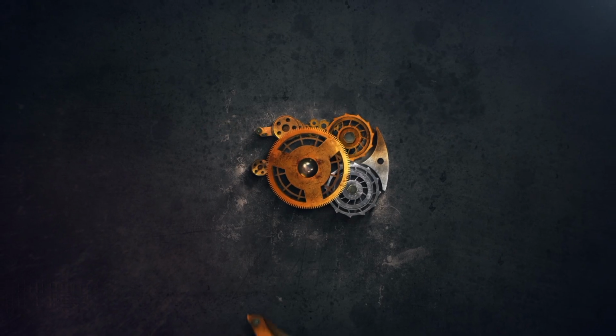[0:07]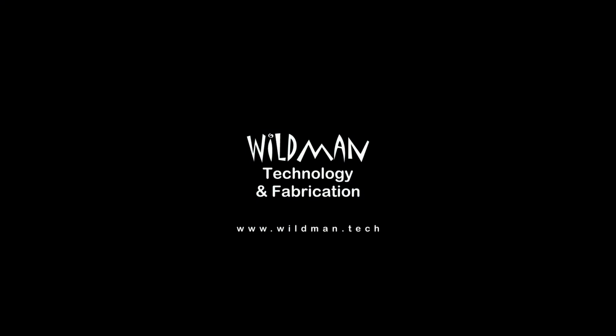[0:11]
Ask your doctor if medical advice from a fabrication shop is right for you.
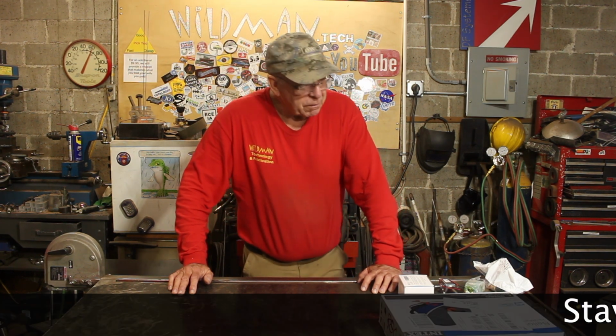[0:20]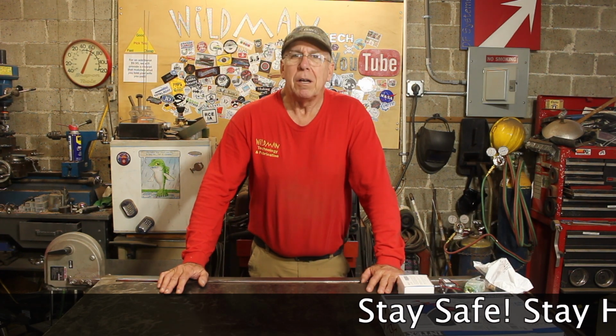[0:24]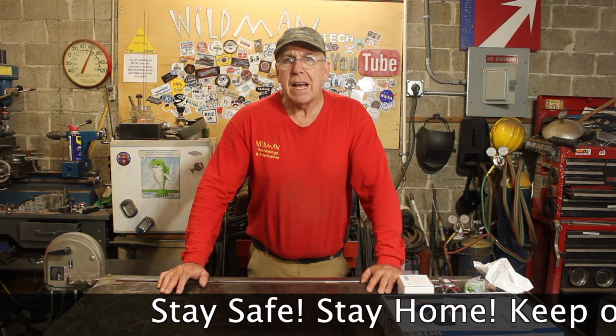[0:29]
Well, friends, every time I turn around, I'm hearing the phrase uncertain times. And why are these times uncertain? It's because of this coronavirus pandemic. So what are the things that make these times uncertain? Among them, it's shortages of things like toilet paper, bottled water, face masks, respirators, and ventilators.
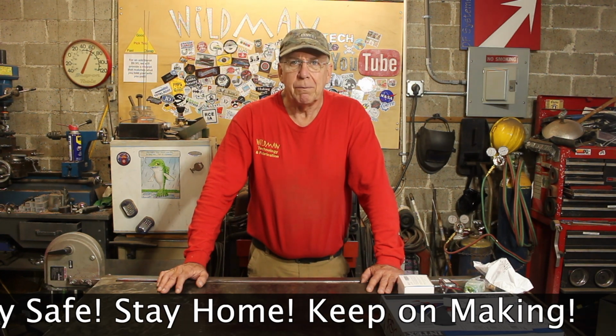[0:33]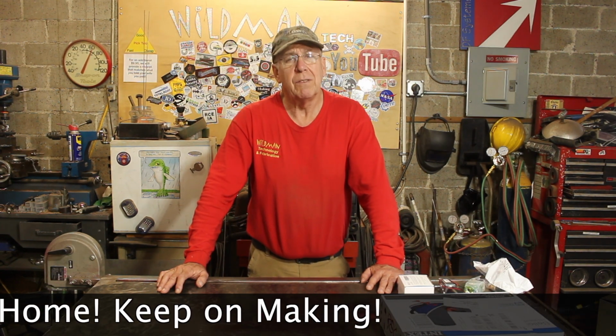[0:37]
Now, I've already made some face masks, and I didn't bother to do a video on it because there are lots of videos on making face masks, and it's really simple. The easiest face mask is just a bandana folded four times with two rubber bands on it and then folded inward on itself. It's incredibly simple. I feel a more worthy task for the channel is to build a ventilator, so that's what we're doing today.
Now, before you guys go getting on me about no FDA approval and a bunch of other stuff like that, 3 weeks ago, cloth masks were strictly out. Now they're not. When times get tough, FDA approval goes out the door. If this thing works, it's going to be an easy project that anyone can make. You'll have this video as reference on how to make it, and on top of all of this, I personally am an at-risk person. I have COPD, and if I need a ventilator, I'm going to have one. And if it doesn't have FDA approval, I just don't give a damn as long as it works.
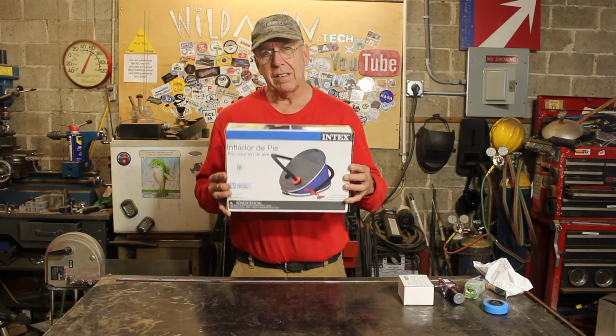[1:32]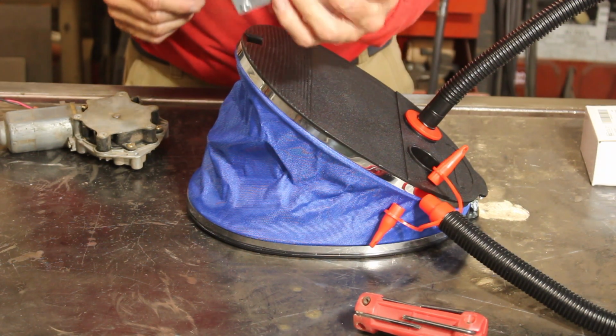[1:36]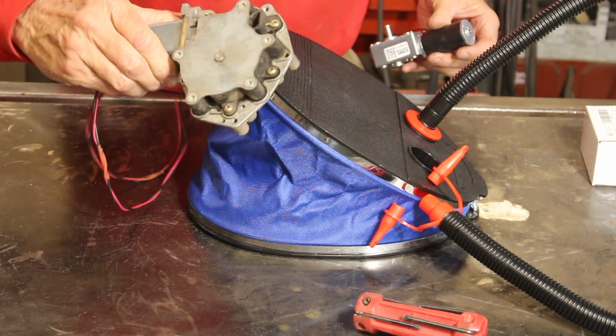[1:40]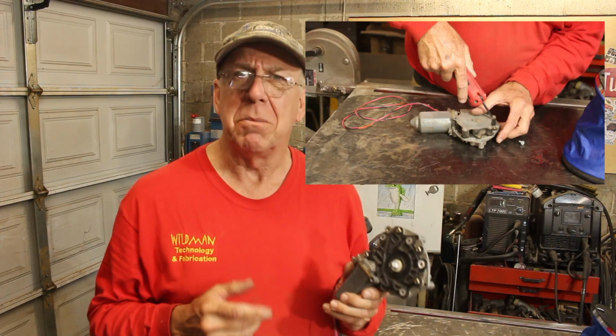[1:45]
We're going to start with an Intex bellows pump. Okay, that'll deliver the volume, but I don't think this little motor's going to drive it. But I have this old windshield wiper motor. Let's see if we can make that work. So this is kind of funny. I just did a whole bunch of mods to this motor, and I'll show you up here in the PIP.
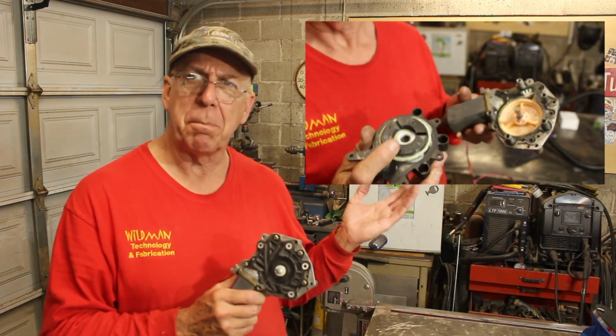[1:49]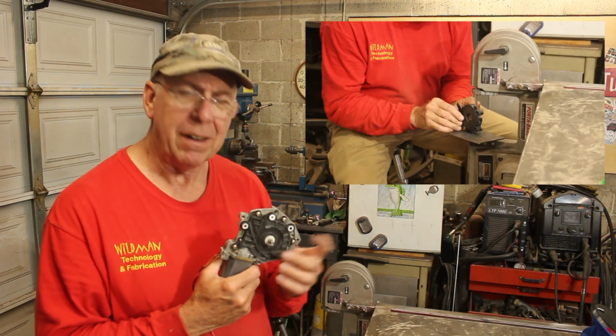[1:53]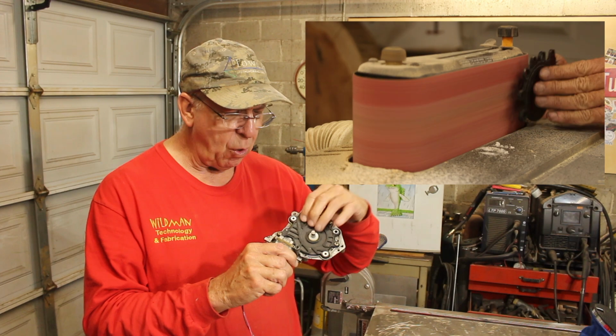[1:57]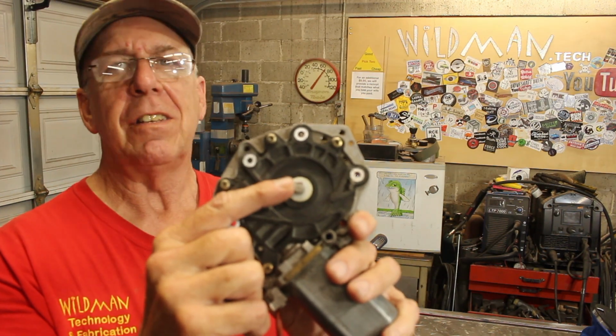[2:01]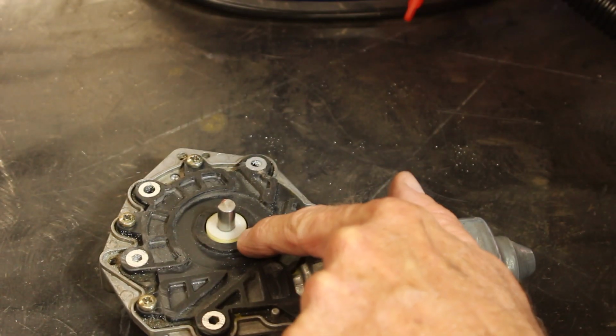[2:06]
To start with, I took it apart. Then I identified the drive interface from the worm gear. Then I shaved off all the excess material from this black plate that holds all the guts inside. Then I shaved a flat onto this spindle, only to discover that it is stationary. The part I cut off is the part that turns. Now I really need a gearhead motor, because this thing takes a lot of force. Plus, I need the low speed. A person only breathes between 12 and 16 breaths a minute, so that's the maximum number of compressions this thing can have.
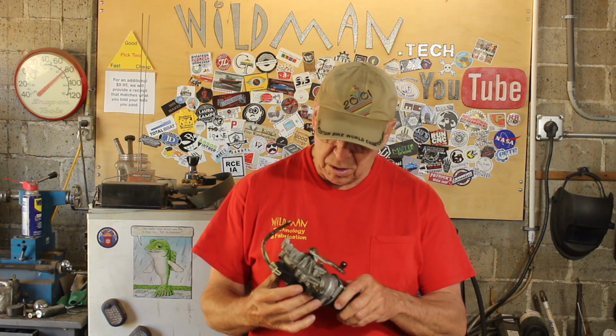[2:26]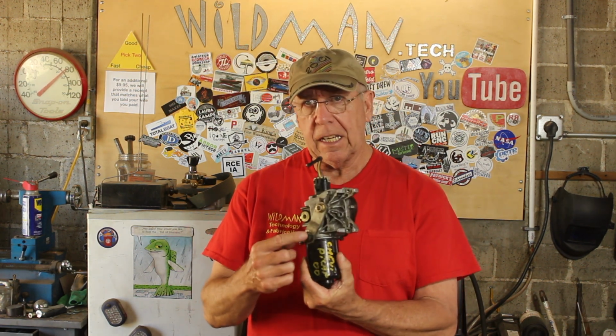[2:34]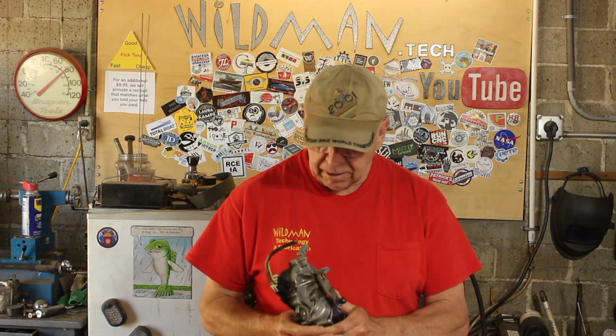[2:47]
Alright, it's the next day, and I've got construction crew next door, so they might generate some noise for us. I got a windshield wiper motor out of a Chevy Silverado 1500. I got lucky, it had the crank arm on it and some of the wiring, because this plug is really specialized. This one has an electronic pulse module inside the motor controller here, and I think that's going to really come in handy. Because of the pulse module, I'll be able to use a potentiometer to vary the sweep rate. Since the mechanics of all of it is going to be easier, I think we'll start with that.
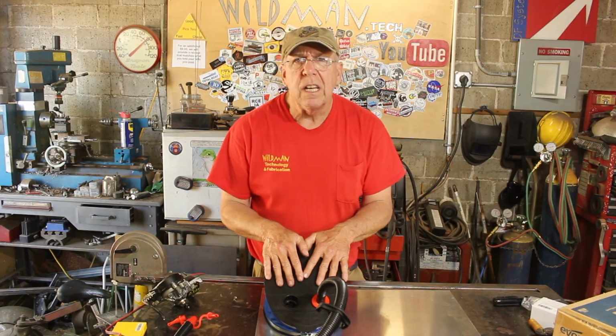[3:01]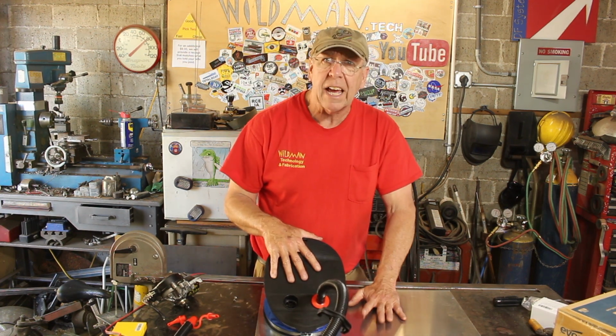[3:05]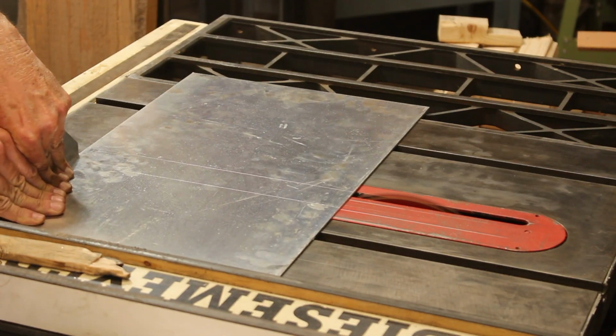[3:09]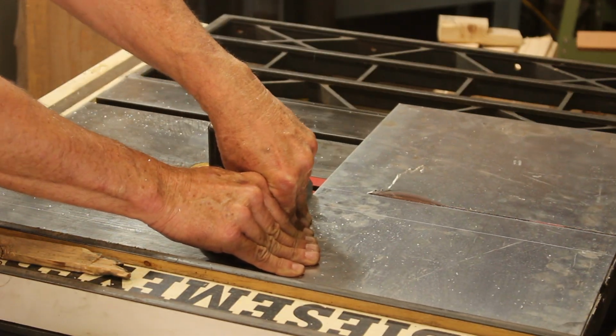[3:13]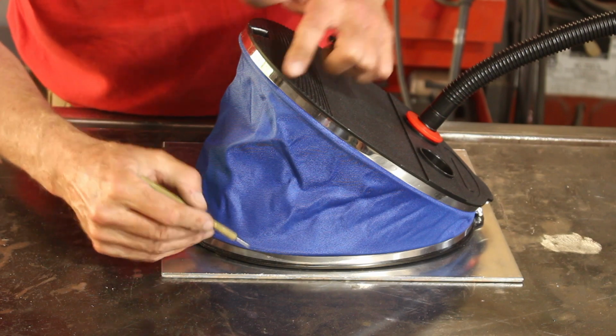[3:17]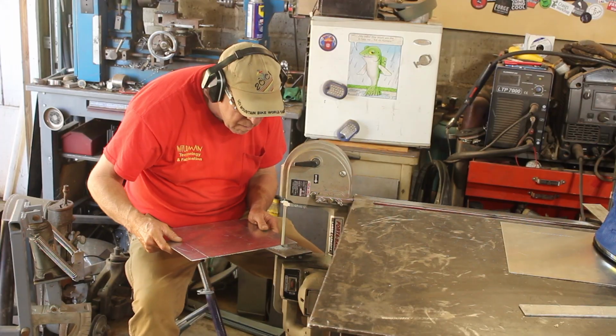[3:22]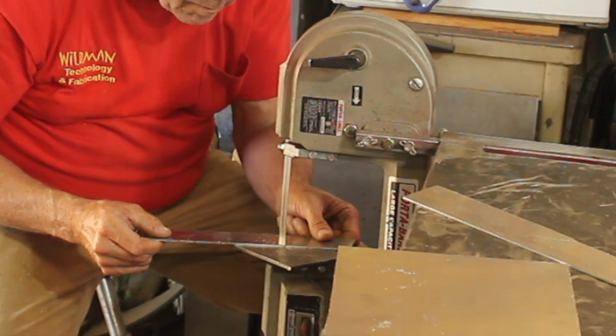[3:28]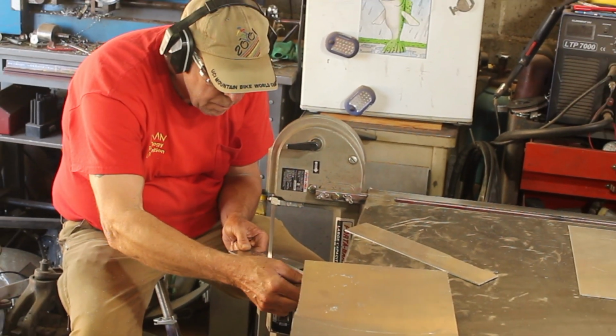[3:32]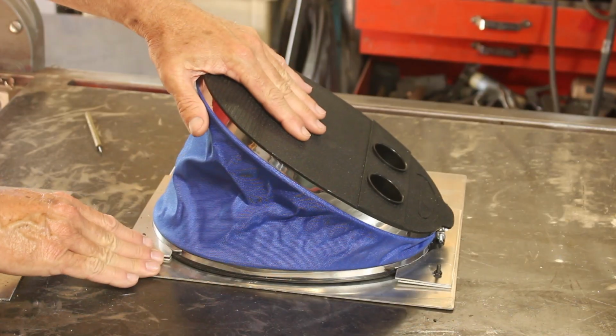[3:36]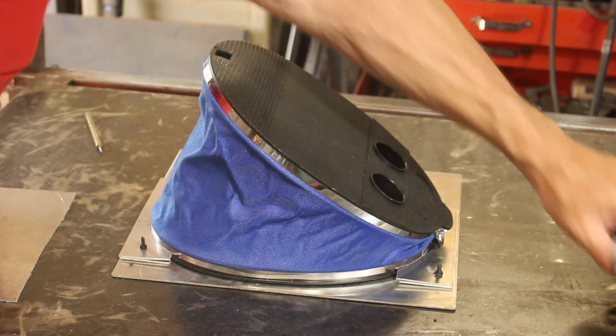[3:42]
Now the first thing we're going to need is a way to hold our pump in place, and this piece of aluminum should do nicely for that, but it's way bigger than it needs to be. A lot of people don't realize this, but most woodworking tools work just fine on aluminum as well. Okay, so I'm going to take the drop from that cut and make clamps. Okay, now we have our pump mounted to our base plate. Now we need to create a motor mount for our windshield wiper motor.
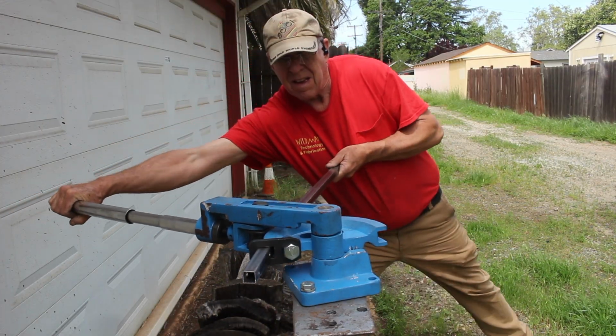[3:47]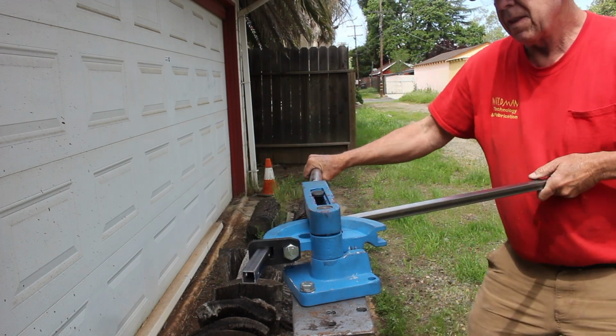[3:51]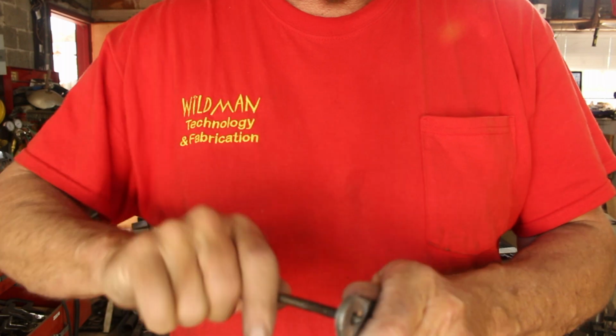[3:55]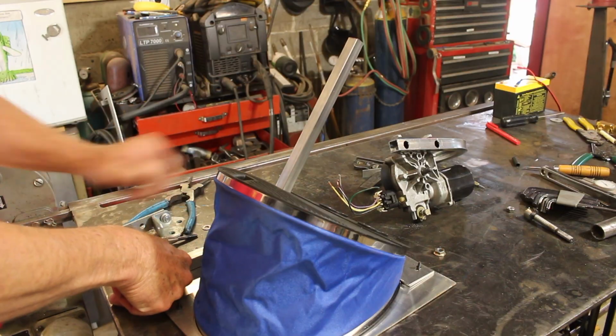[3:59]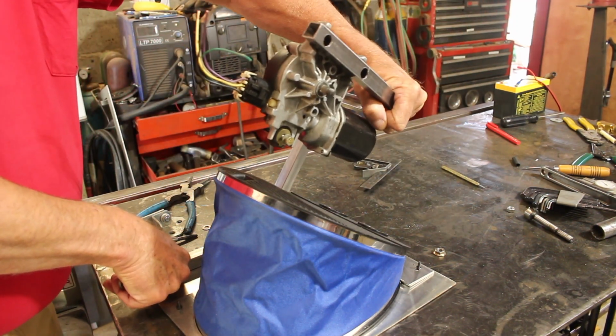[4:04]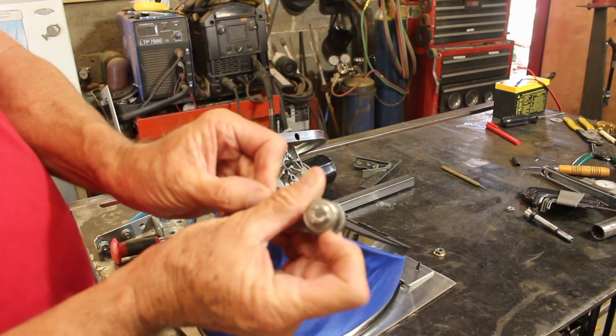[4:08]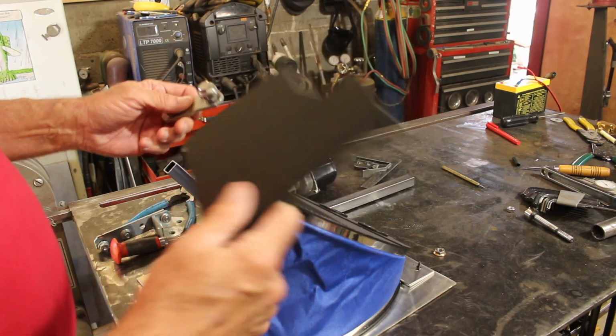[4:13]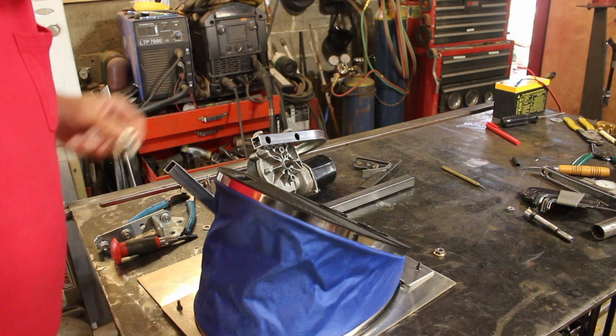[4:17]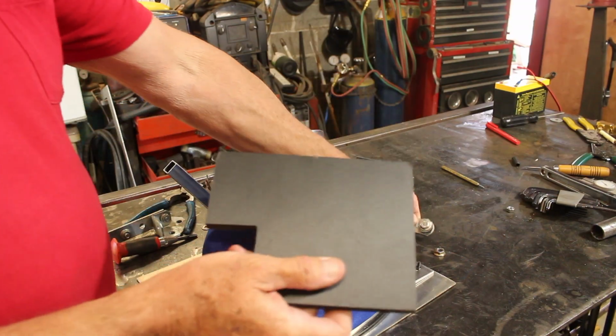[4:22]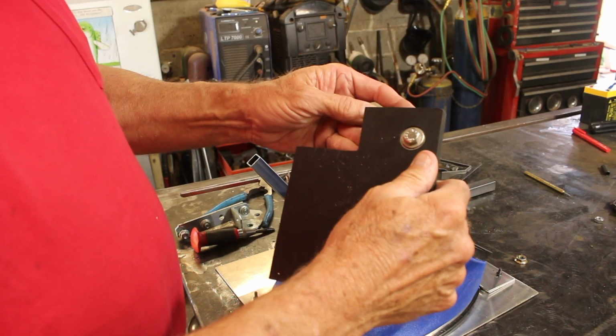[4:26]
And here I'm tapping threads into the crank arm to create an interface for our push rod. So I have a tube here and another tube there, and I'm going to weld those two together. But before I do that, I want to build the crank push rod. So I've got my bearing on the crank, and I'm just going to use this foam PVC as the push rod. And we'll stick it right into that hole, and that should work just fine. We'll start by drilling a hole for this bearing, and then somehow interface the two. Okay, that is a really nice fit. I just need to figure a way to hold it in place.
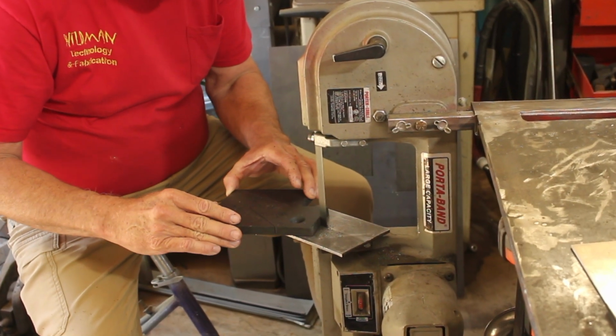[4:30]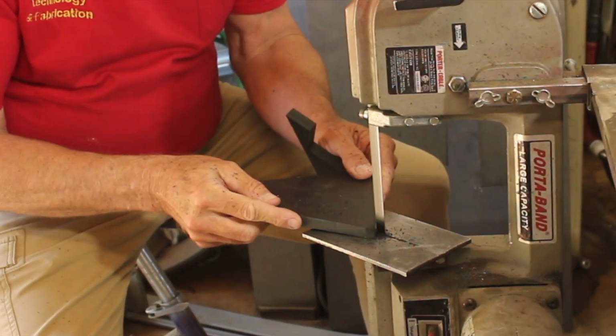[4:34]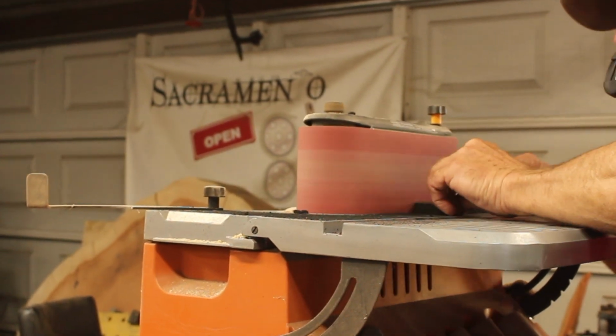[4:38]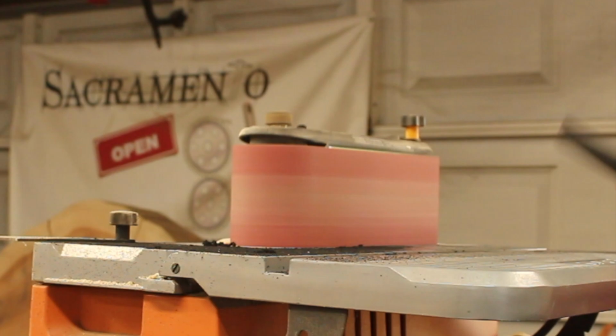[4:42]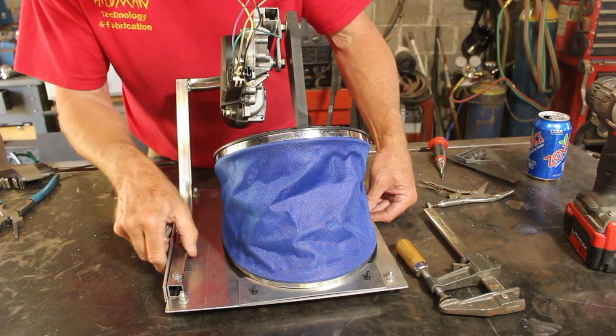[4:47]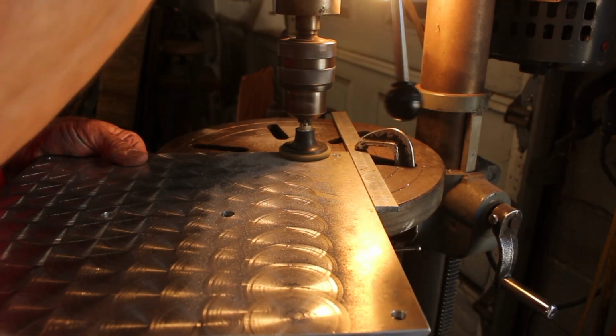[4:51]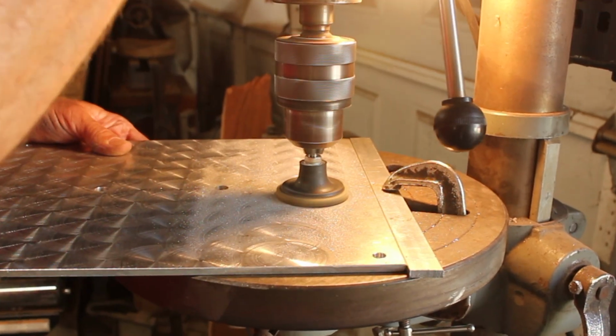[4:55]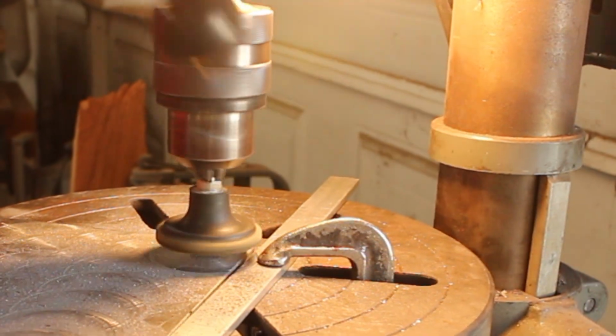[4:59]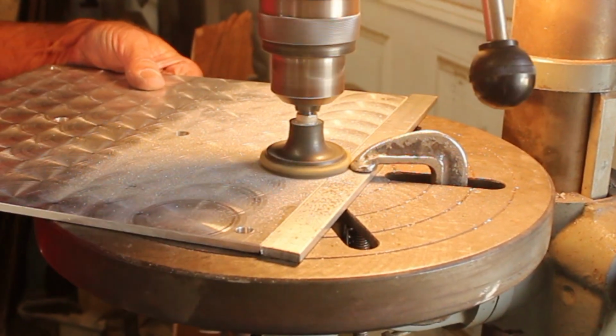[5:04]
That is too wobbly. Even though I put this extra gusset on there, this whole base plate is flexing. So the other base plate was just too thin and it was flexing all over the place. I found a piece of 3/16 aluminum, which is completely rigid, but it needed to be dressed up a little bit, so I decided to scrub this fish scale pattern into it.
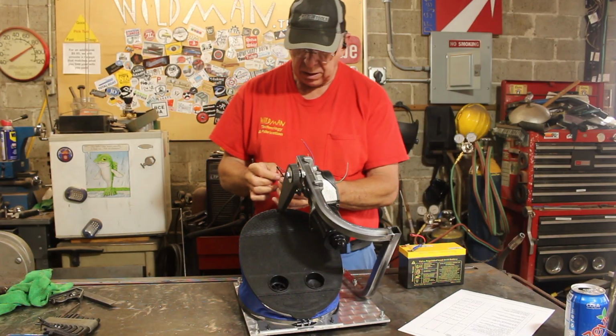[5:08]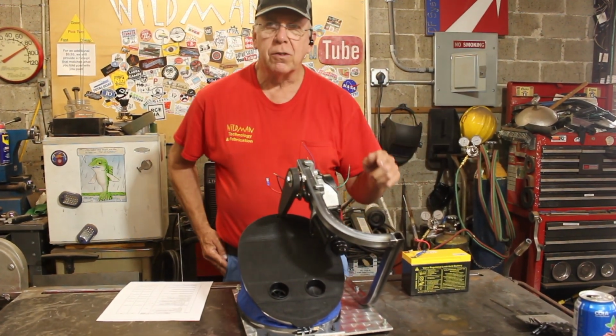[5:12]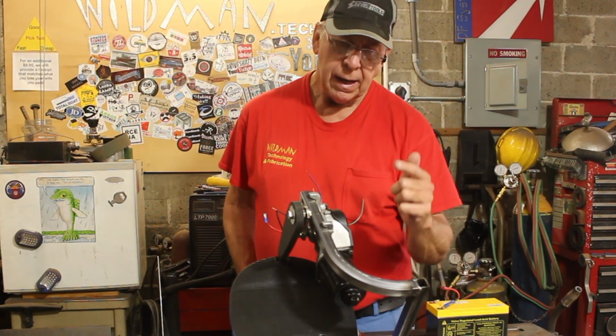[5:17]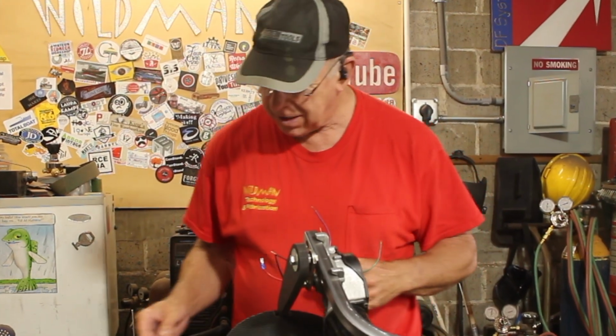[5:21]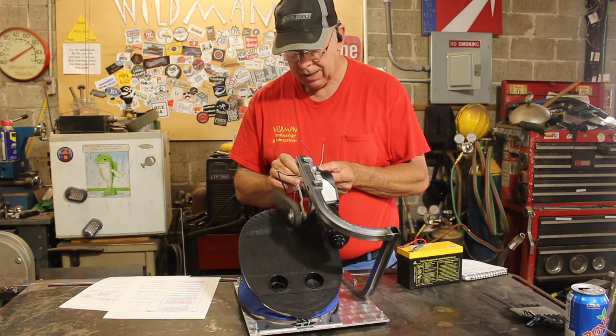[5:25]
Okay, so we're at that point in the build where we can do an initial test. I want to take a minute to thank the nice folks over at Dorman. They manufacture these pulse control modules, and they provided me with the documentation so I could figure out just which one of these wires does what. Okay, and that is not working.
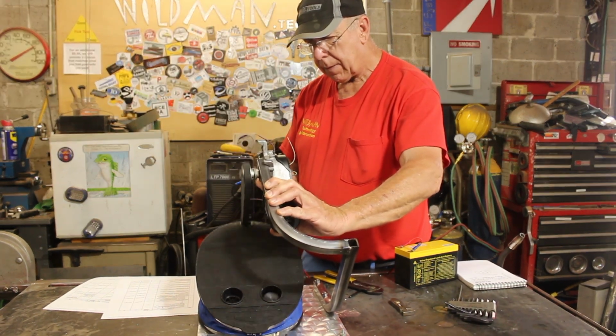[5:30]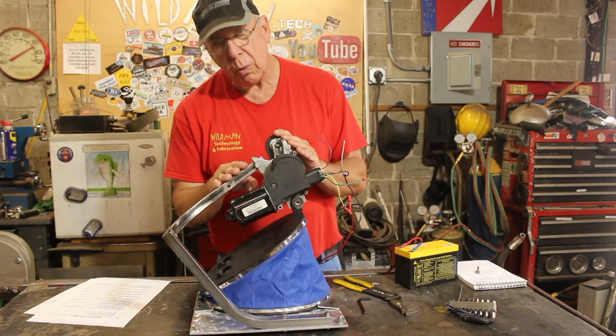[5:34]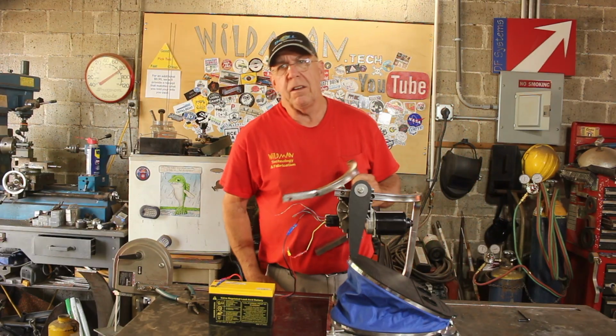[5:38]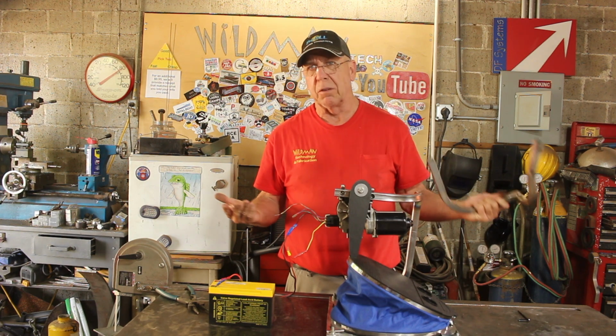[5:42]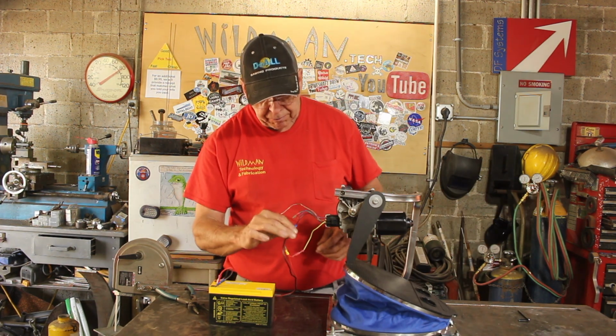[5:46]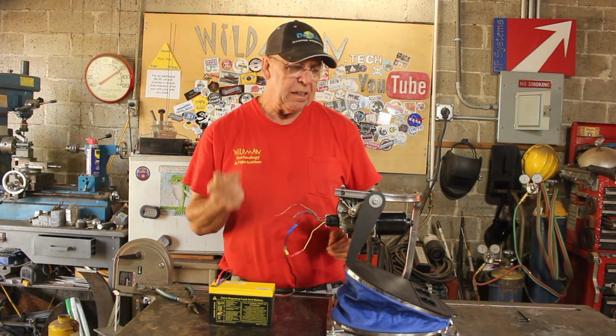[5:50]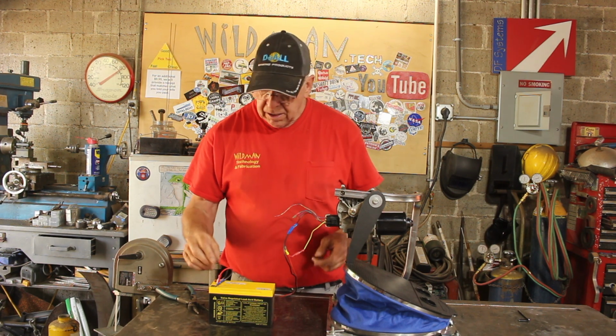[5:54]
Okay, so this is not quite in the right place. If I move it that way, it works. All right, what I ended up doing was first trying to modify the original bracket, and that was a complete failure, so I just made a new one. We've got a few wires going on here. We've got the ground and what they call the accessory wire, and what that does is if the motor loses power before it's in its home position, the accessory voltage will bring it back to home.
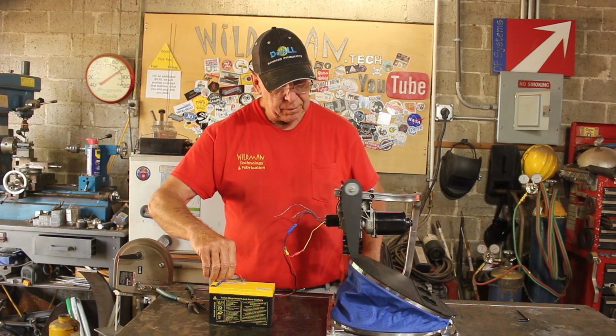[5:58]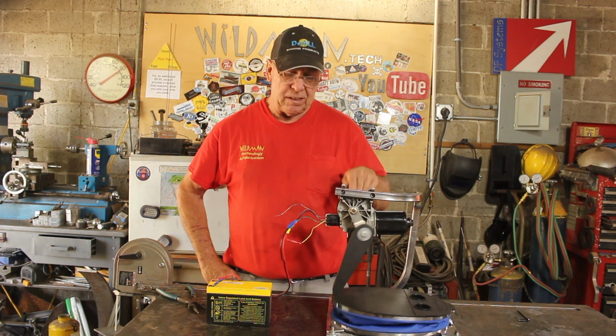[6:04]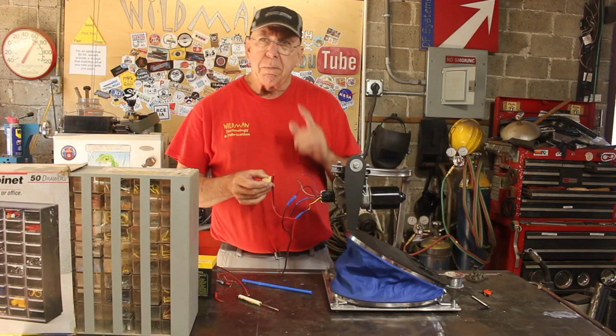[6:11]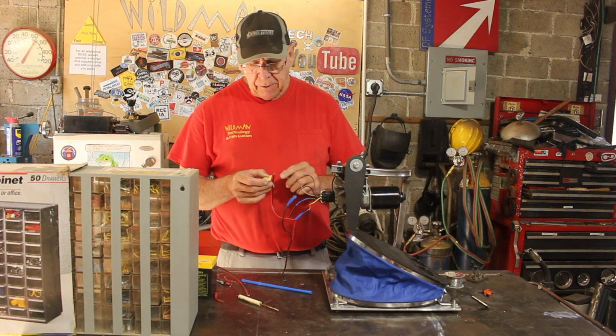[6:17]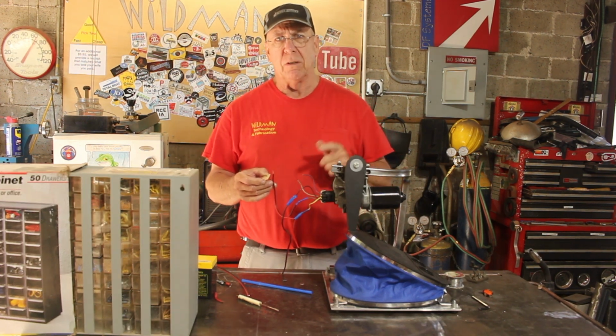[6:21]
Then we've got our low speed, and that's working pretty good, but this is way too fast. The speed of each stroke is probably okay, but we need a break between each stroke to allow for exhalation. So it took me a while to figure out how this works. If you energize the low speed wire all by itself with 12 volts, that turns on the windshield washer function, which gives you, I think, 3 sweeps. Let's try it.
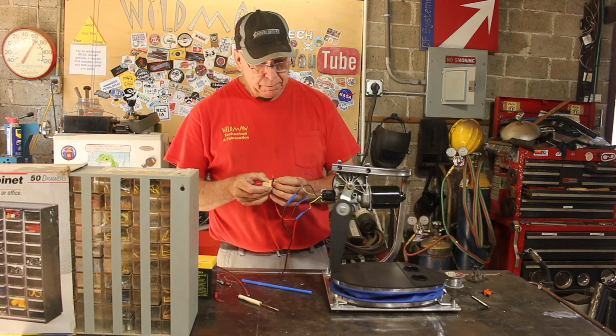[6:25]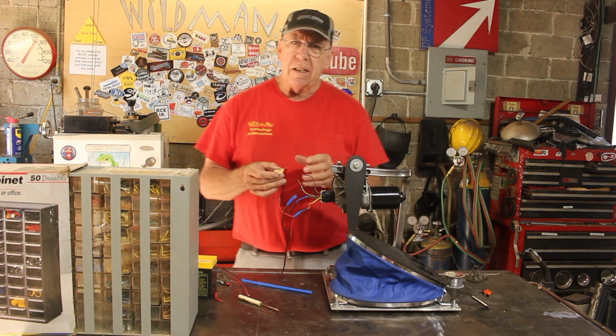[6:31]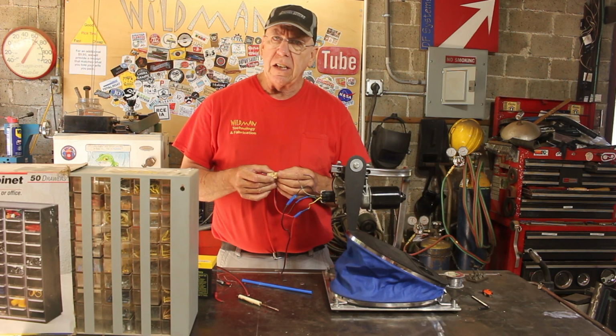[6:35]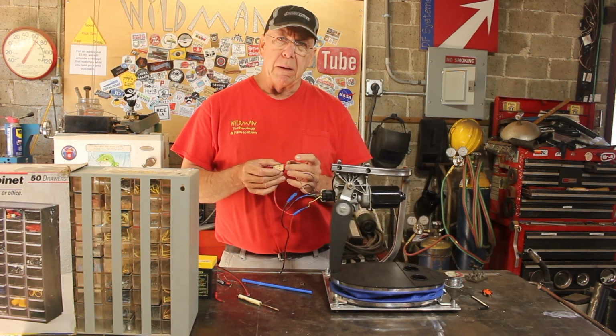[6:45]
If you were to hold it, it just goes on low speed until you let go of it, and that just gives you 3 more sweeps. When you push the windshield washer button, that is what makes this same connection. And when you let go of the windshield washer button, 3 more sweeps.
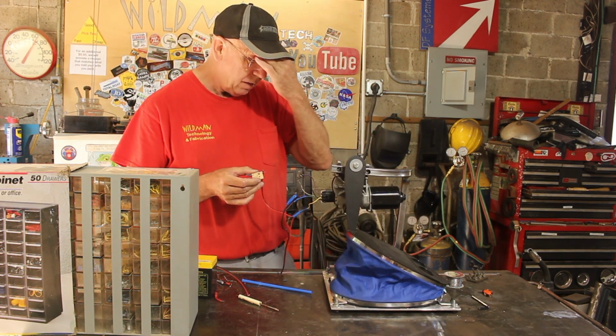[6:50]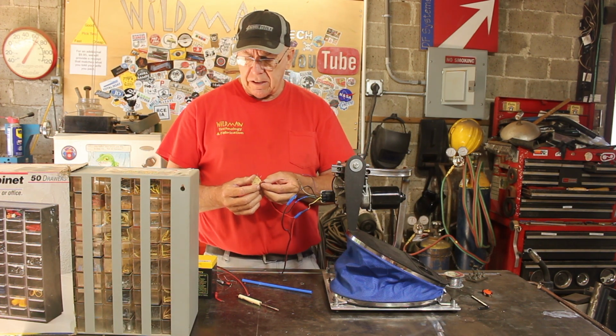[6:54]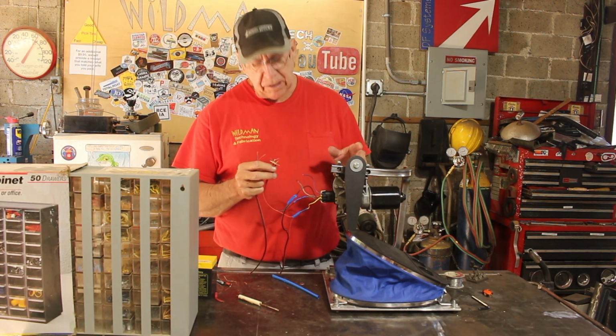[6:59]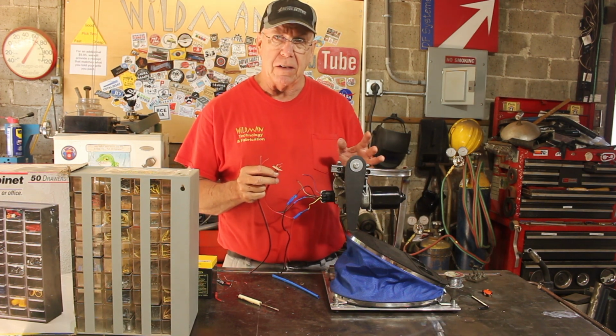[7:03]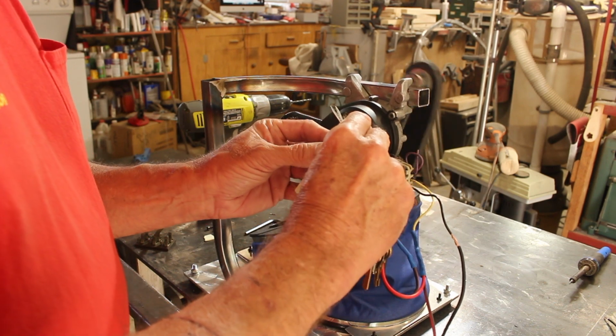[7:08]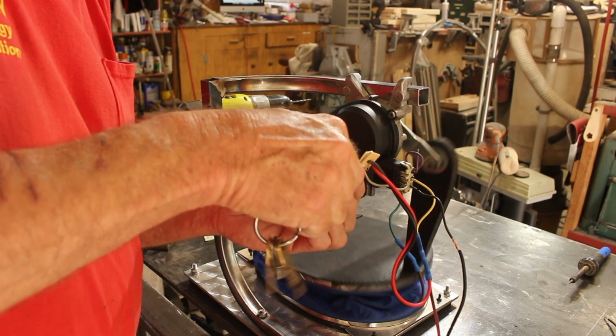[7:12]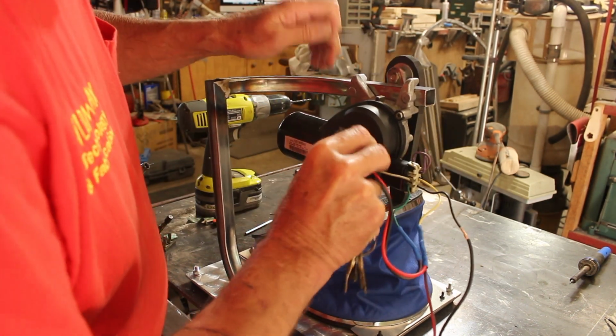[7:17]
Now, if you run it through some resistance, and it took me some experimentation to figure this out, now at 3,400 ohms, that gives me 13 cycles per minute, and that's a good rate. Adjustable would be better, but right now I just want to prove a concept. Now I've got my little resistor board. I'll just put a piece of double stick tape on that, and we'll stick it to the side of the motor. And that should do just fine.
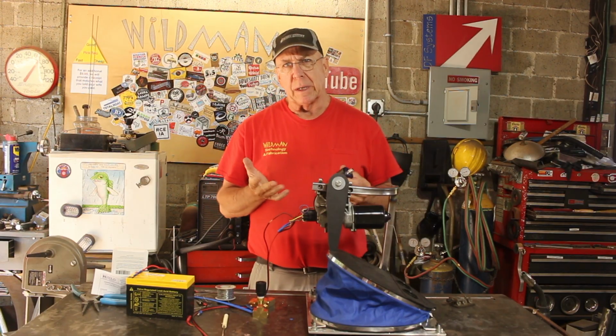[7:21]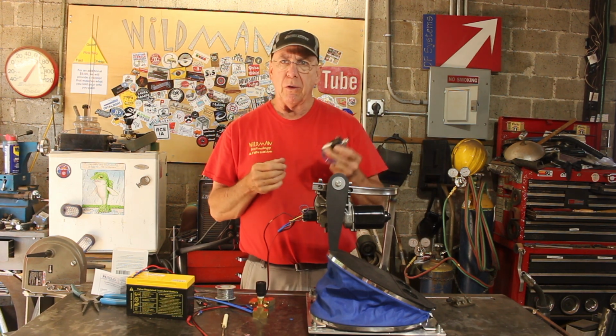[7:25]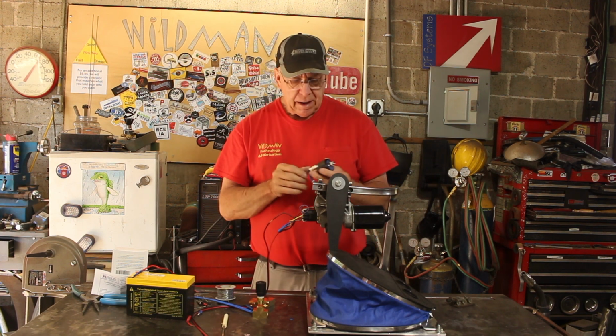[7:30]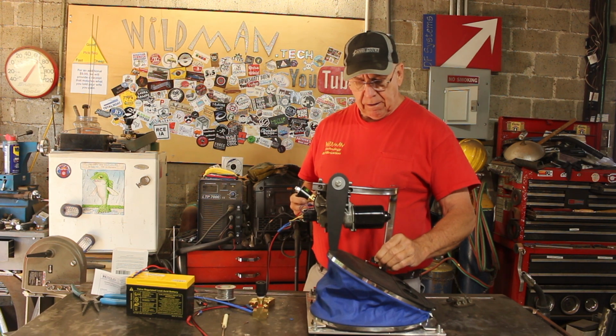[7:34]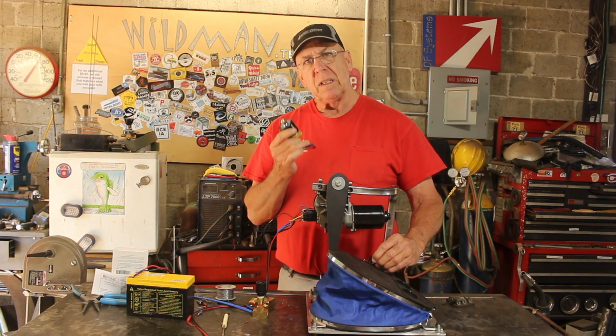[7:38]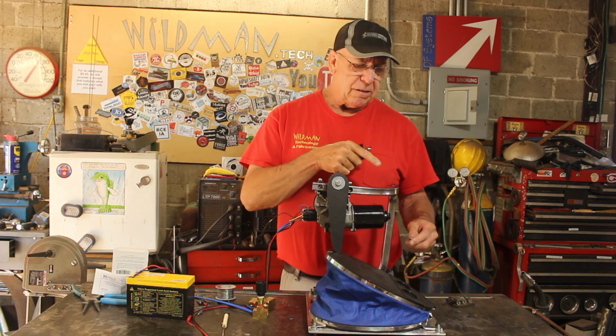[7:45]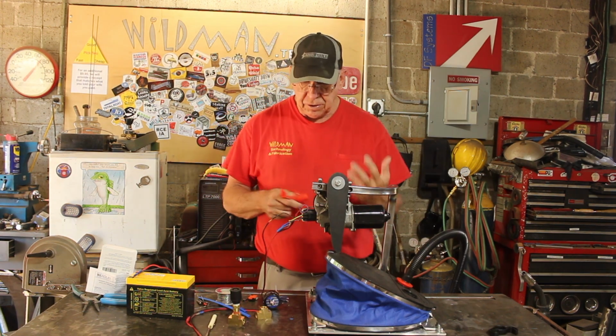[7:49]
Now that we got the pump working, that will force air in, but then we need to put a solenoid valve on it to let the air escape back out of the person's lungs. And the way we'll do that is I'll put a limit switch on just right there, and when the limit switch is engaged, which is most of the time, it will open this solenoid valve. And the moment the paddle comes off the limit switch, this valve closes and allows the pressure to be delivered into the person's lungs. So to interface to the person's lungs, how are we going to do that?
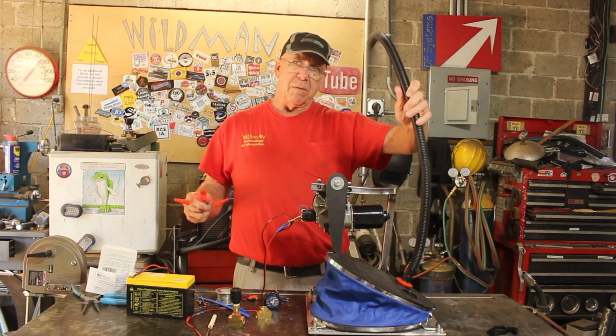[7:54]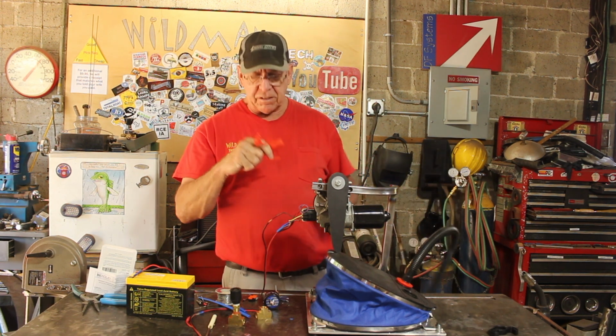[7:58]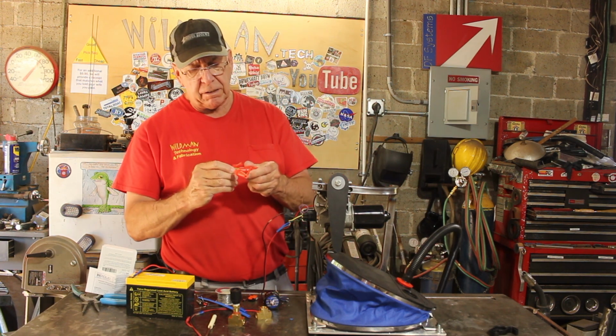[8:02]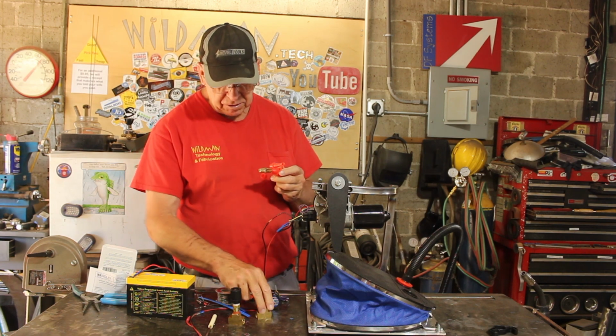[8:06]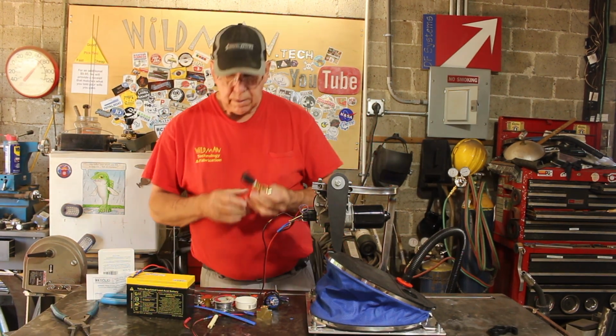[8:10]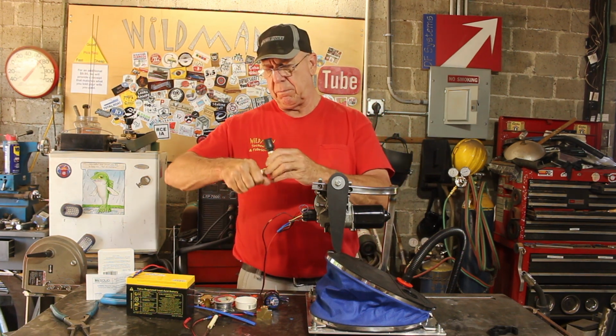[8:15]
One thing is we don't need this much hose, so I can shorten that up. Luckily, this end just kind of screwed out of it, and it is just the right size for a 1/4-inch pipe nipple to screw into it. And since I'm using all air fittings, that's perfect. So let me get my Teflon tape. Now, the first thing we want to hit is the pressure relief valve, and I've got one here that's good from 0 to 100 PSI.
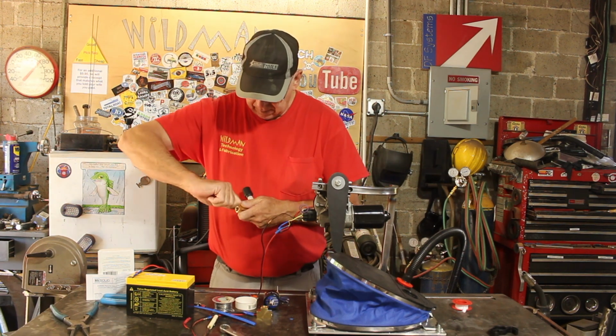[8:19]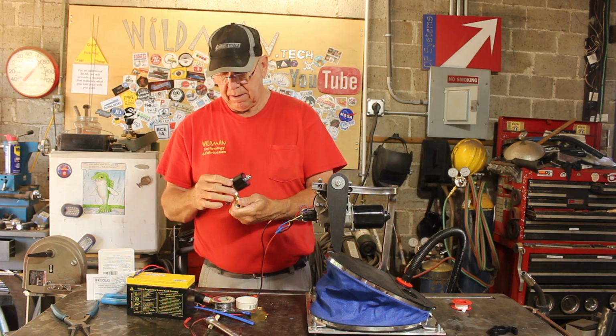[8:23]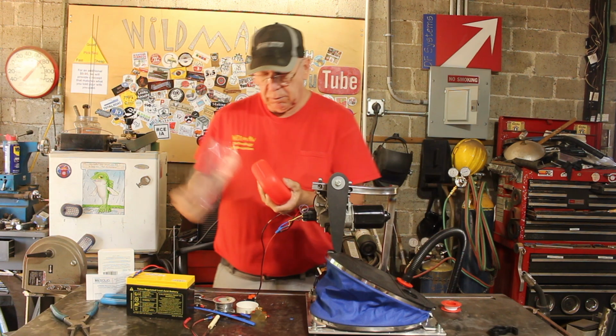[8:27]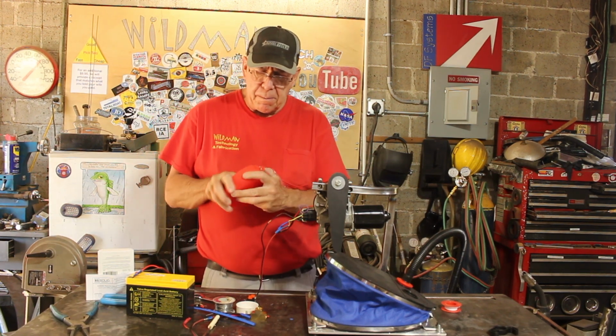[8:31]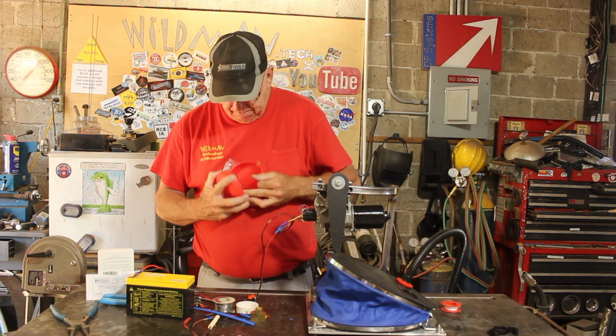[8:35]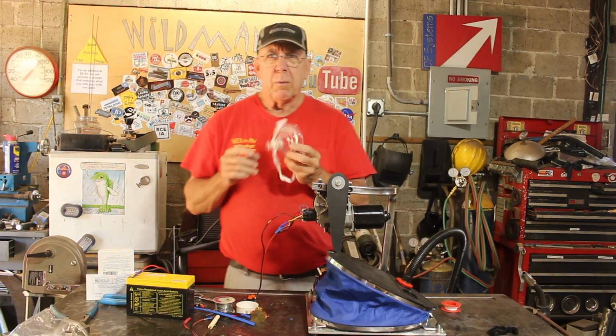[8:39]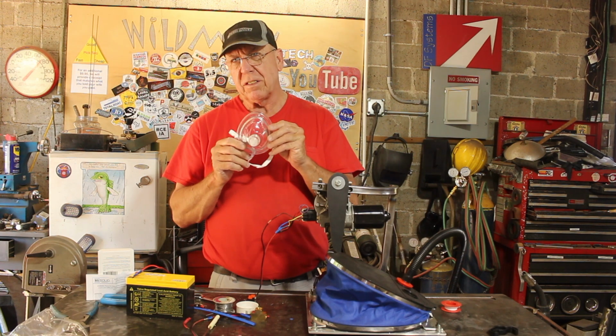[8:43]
Then we want to be into our exhalation valve, and that can just go out to the air. And the last thing we want to do is interface to the person's lungs, and I think this CPR mask should be a good way to do that. And one thing I just learned is the CPR mask has its own exhalation valve. We're going to have to block that off,
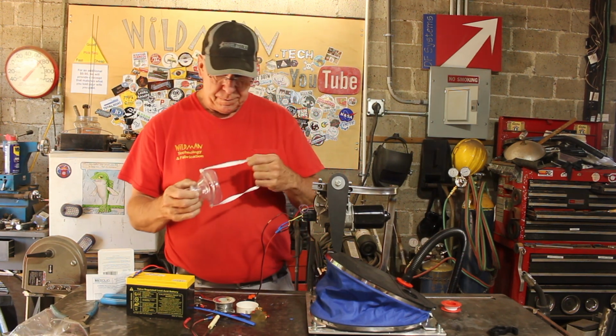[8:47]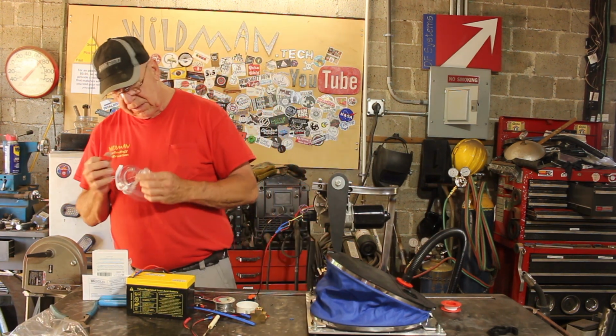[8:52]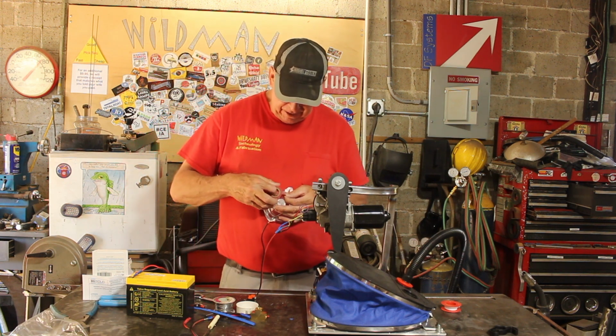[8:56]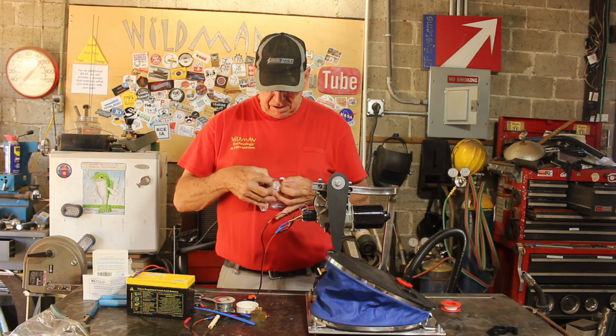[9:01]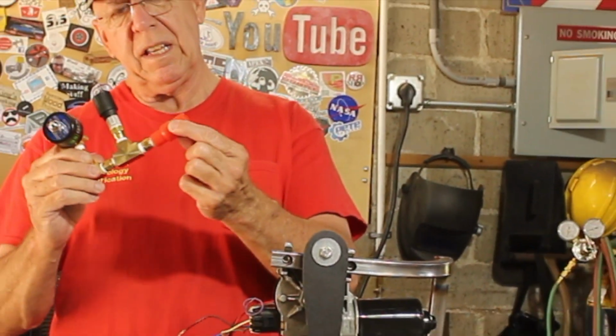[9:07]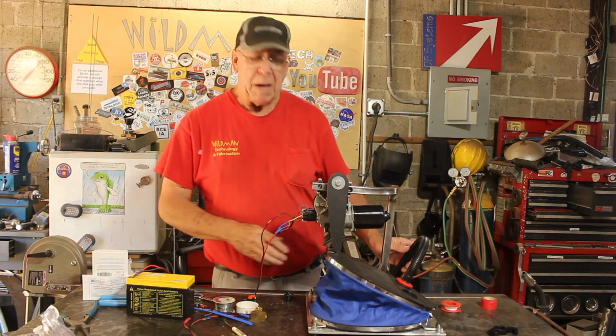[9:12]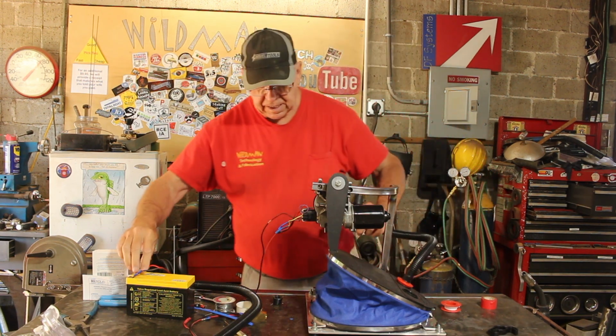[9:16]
otherwise it won't pressurize. One development that's occurred while I've been working on this project is that they've discovered that the ventilator is not the greatest thing to do, and about 80% of the people that get onto them never get off. So, that ain't good. I wish I had another one of these, but I don't, which means I'll have to make something. But that's what I do, right? Now, let's see how this works with this hose on.
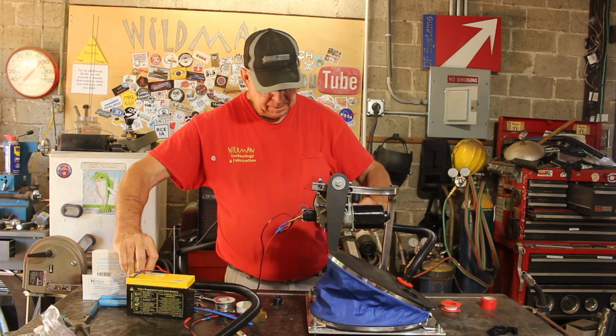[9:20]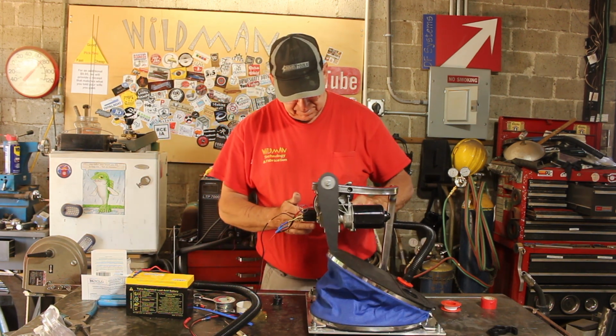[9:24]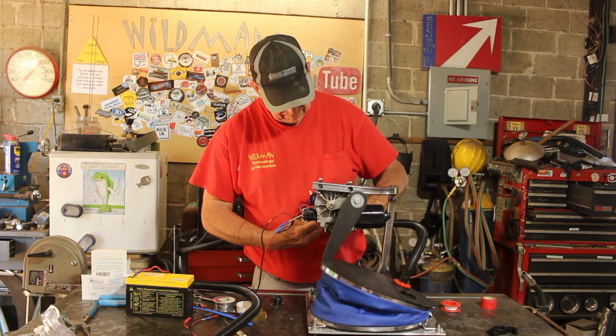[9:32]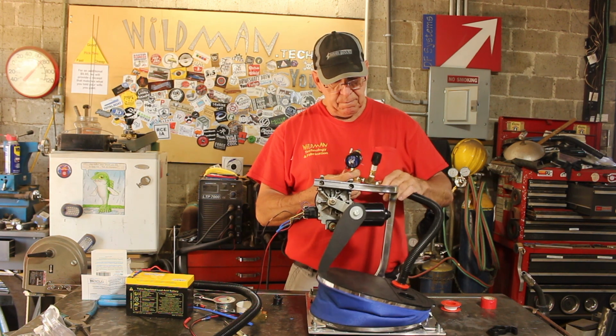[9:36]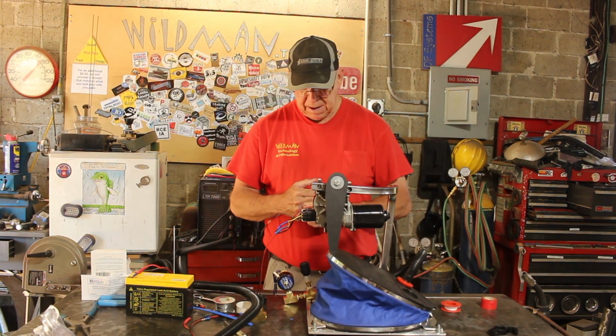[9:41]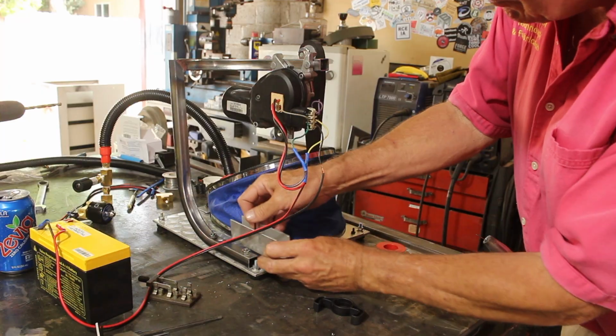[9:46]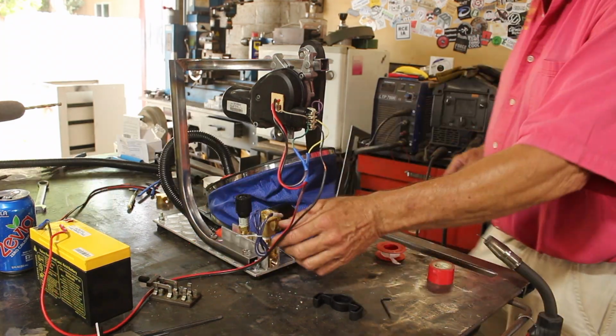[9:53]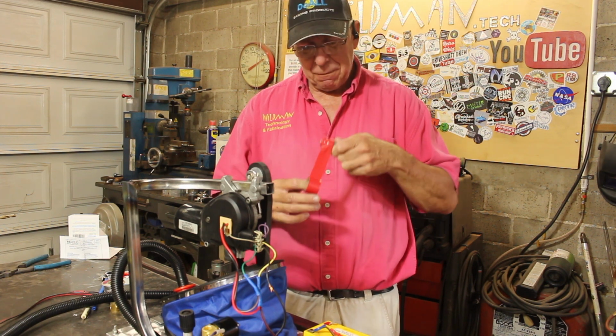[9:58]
Okay, it's looking all right. Okay, and my pressure relief valve is working pretty good. Now we need a mounting arrangement for our little manifold here. And I think this piece of aluminum channel will do fine. I drilled and tapped a couple of holes. Give me a place to put my little holder. This thing is almost done. Now, this may be a crude approach to adapting from my air fitting to this hose, but hey, it works.
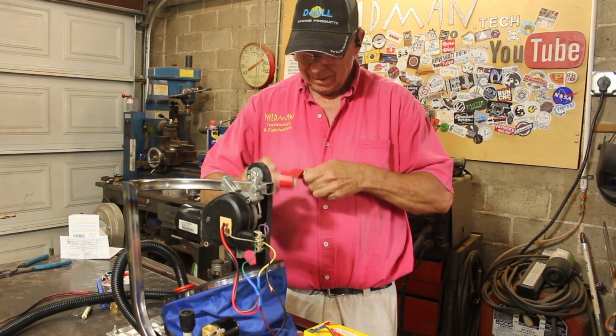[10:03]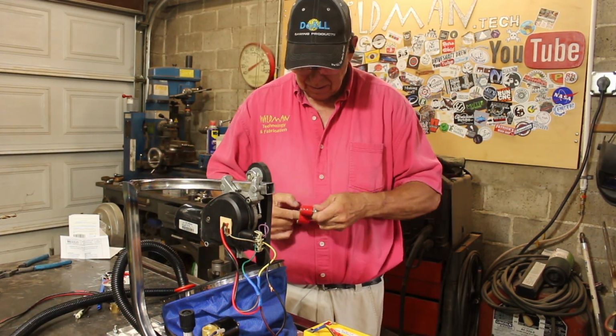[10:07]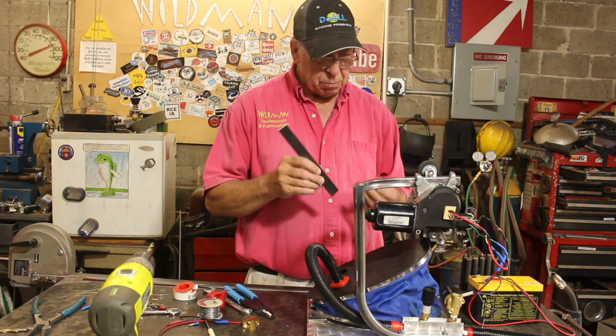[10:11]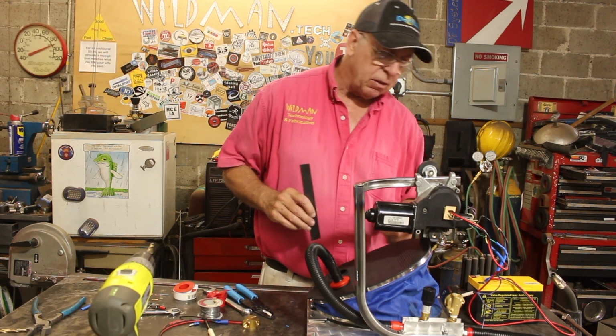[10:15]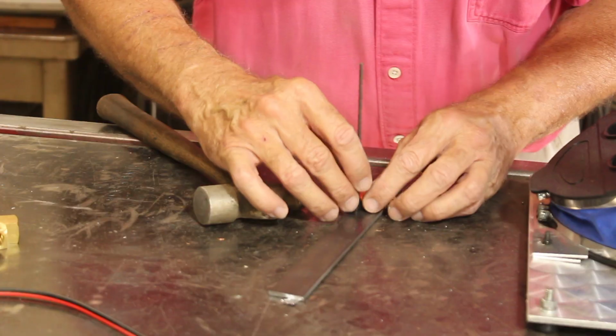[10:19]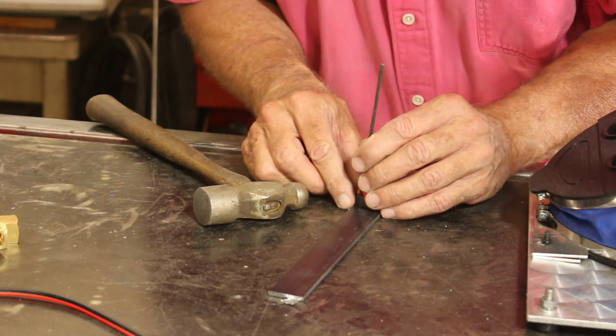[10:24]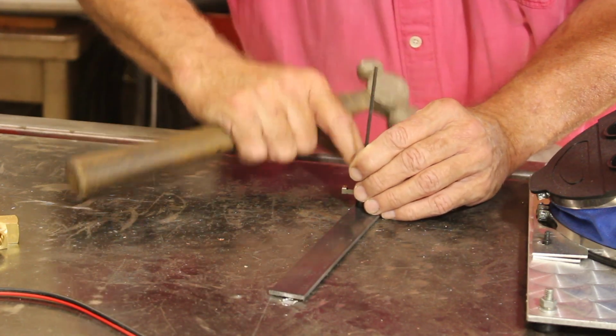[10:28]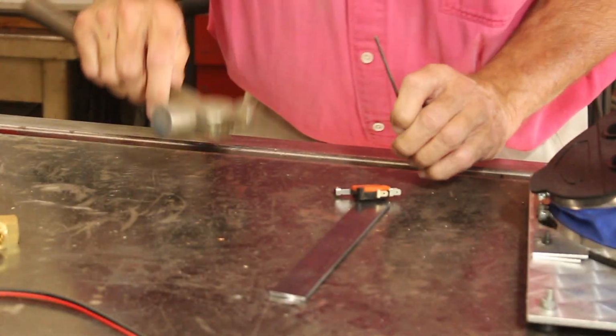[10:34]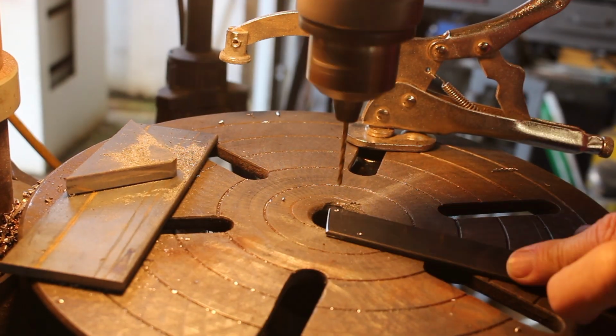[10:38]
Now, this is almost done. All we got to do is make a mount for the limit switch and put it on, and then we can wire in the exhale solenoid valve, and it'll be ready to test. So we'll come in here with a transfer punch and leave a couple of marks for our holes. And transfer punch, as I always say, is just for leaving a mark. It's not a center punch. Now we'll drill that and tap a 4-40 thread into it.
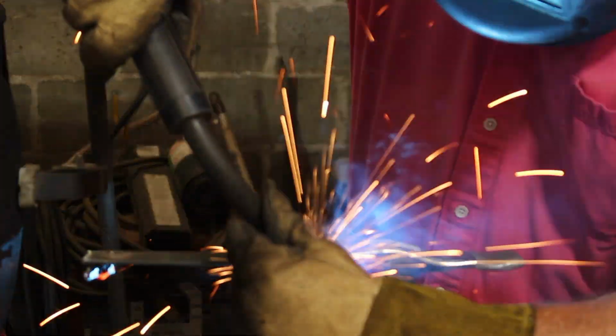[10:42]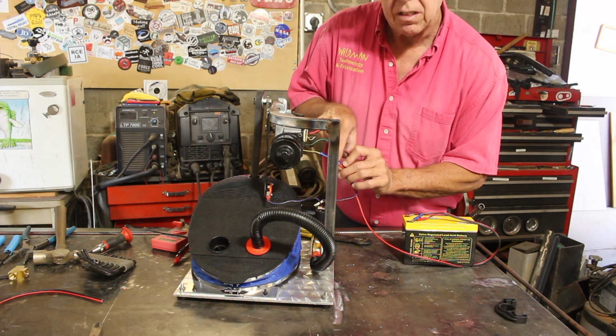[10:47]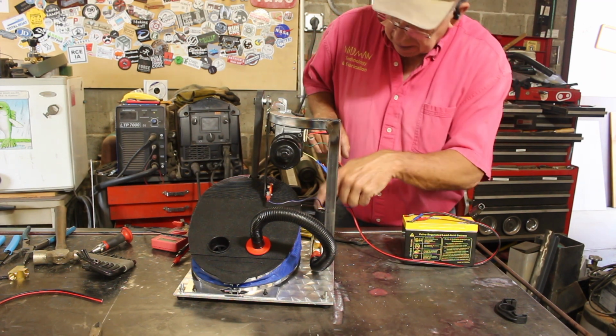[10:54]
Now one thing I did was I soldered that too soon. So I'm going to have to open that back up because I need power to power the solenoid. Okay, so let's give it a try.
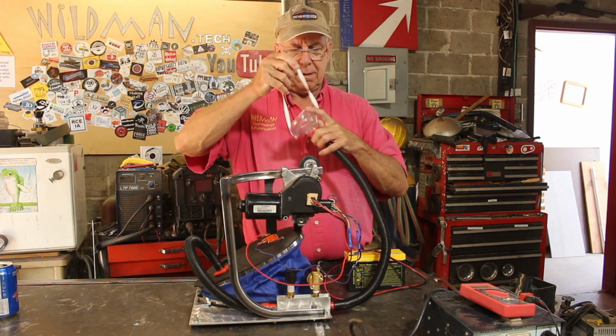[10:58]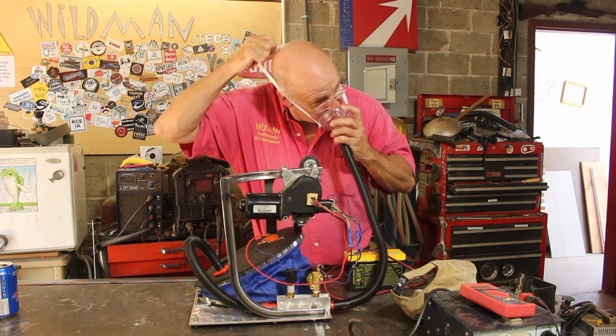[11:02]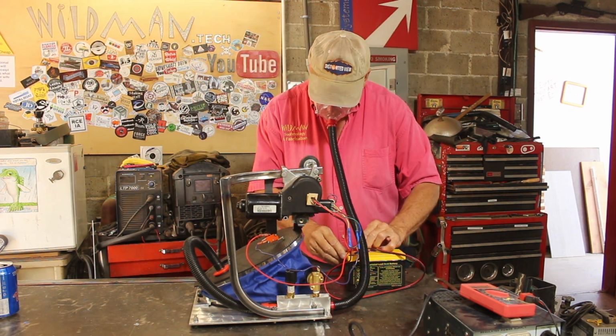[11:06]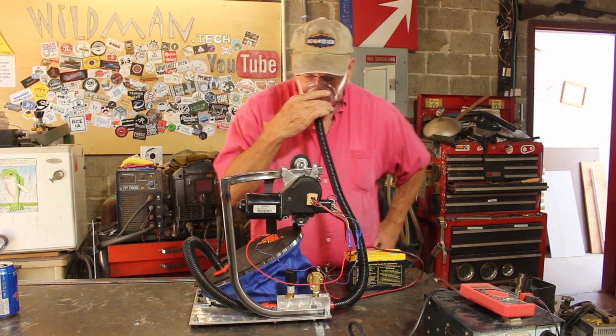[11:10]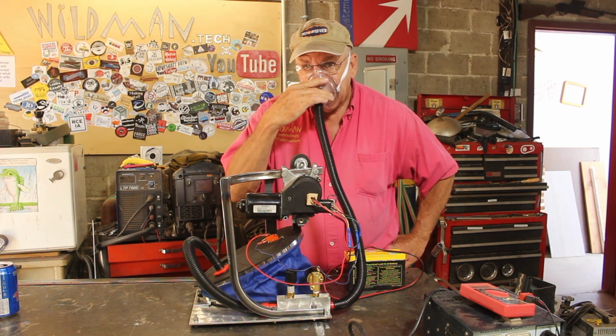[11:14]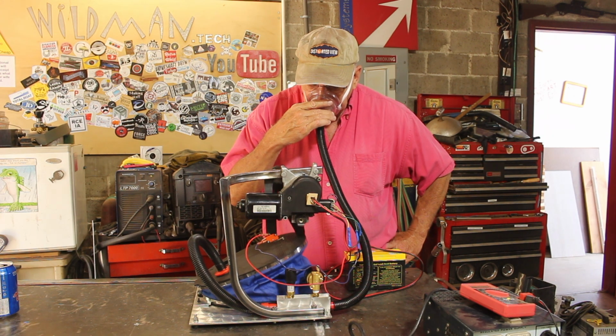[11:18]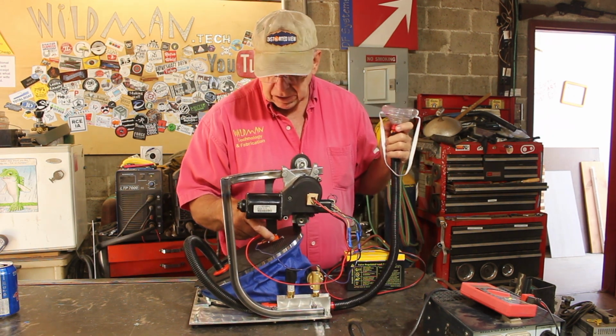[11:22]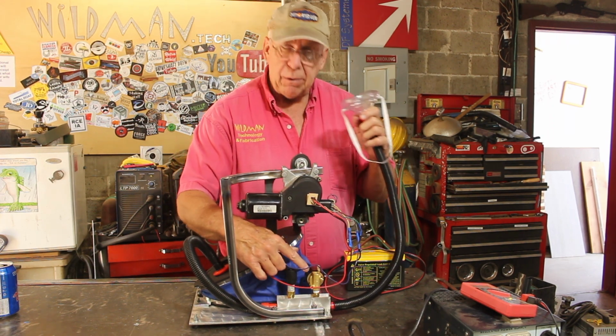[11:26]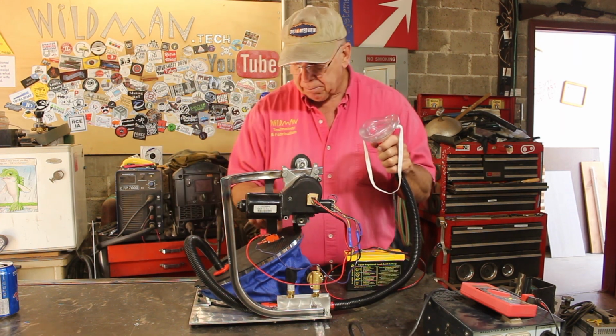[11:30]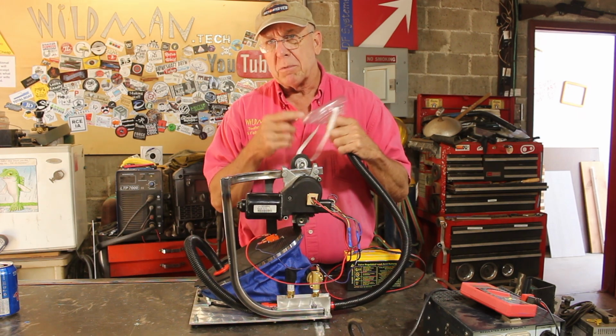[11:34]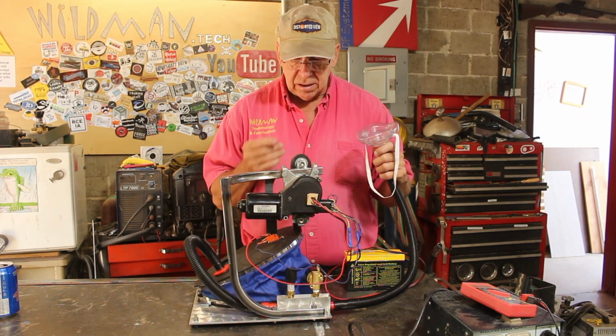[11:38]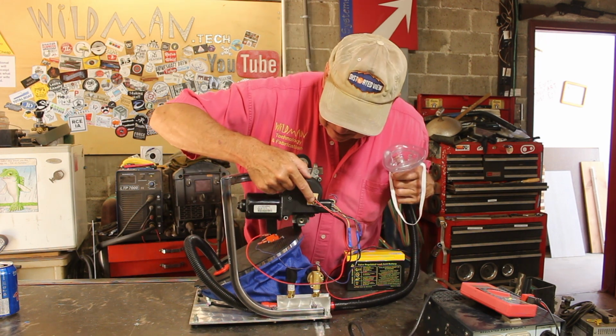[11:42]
When this micro switch is engaged, this valve opens, allowing the person to exhale. The moment the pump comes off the micro switch, that valve closes, allowing the pump to pressurize the mask. The breathing rate is pretty good. It could be adjusted by changing the value of the resistance of this resistor here. I think it's good where it is. So I'm calling this a win.